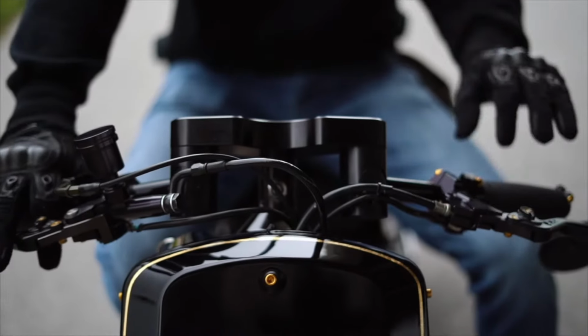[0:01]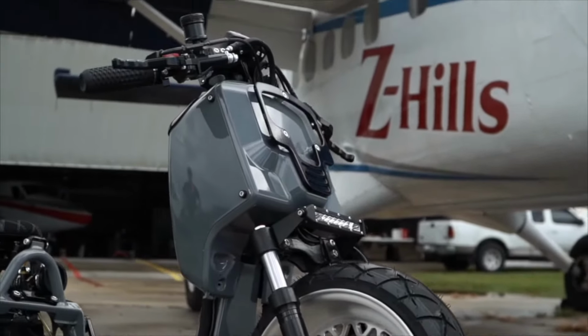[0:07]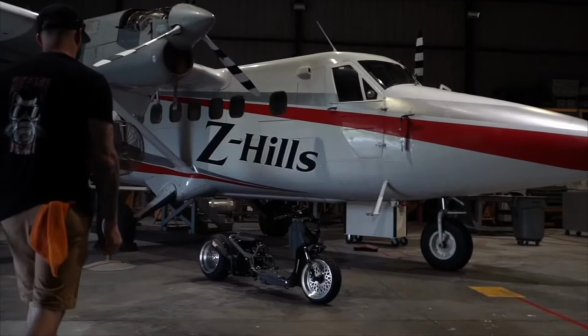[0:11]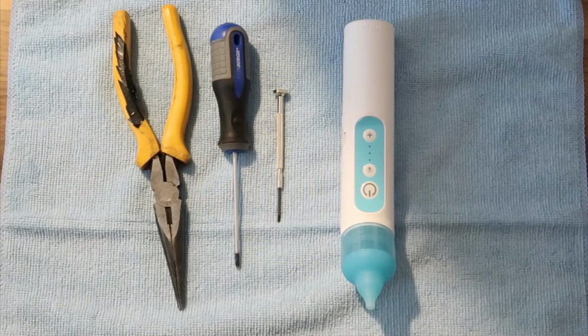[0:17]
Today's video is a little bit different. This is more for the parenting side. Those who follow the channel know I usually do bike stuff, bike builds, everything like that. My wife has convinced me to do a video on the FridaBaby nose sucker.
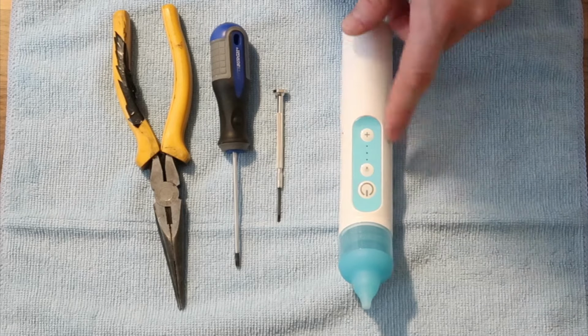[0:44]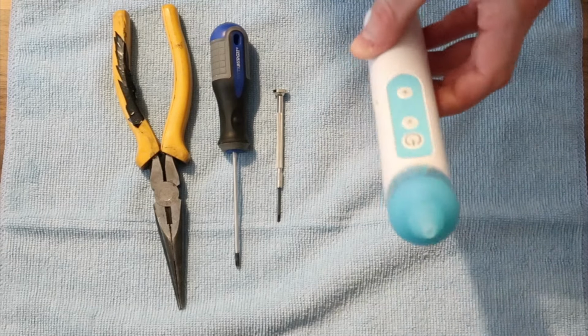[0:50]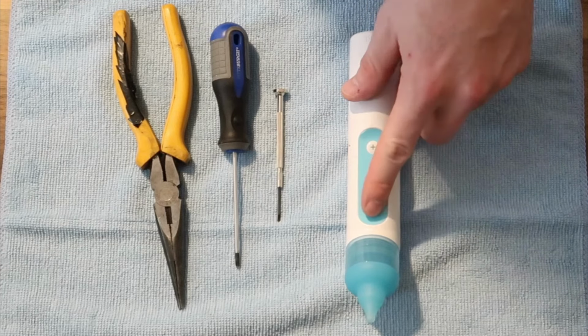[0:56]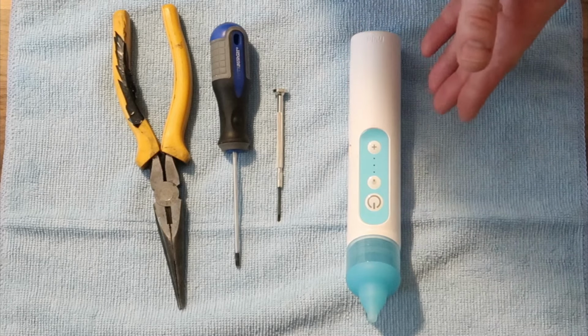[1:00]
Of course, as a lot of you know, we just had a baby and this has stopped working. We just got it about 4 months ago. It's an electric sucker just to suck the boogers out of the baby's nose. It's very popular on Amazon. What happens is when you go to turn on the power, it stops sucking and it makes like a high-pitched ringing noise. So this is how you're going to fix it.
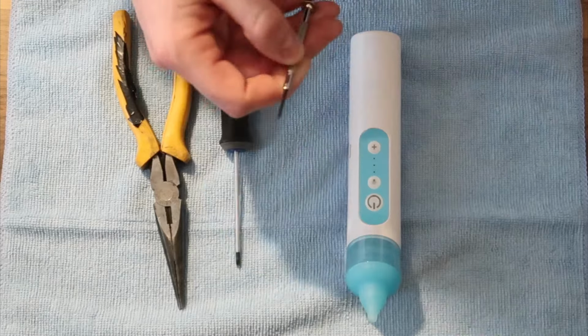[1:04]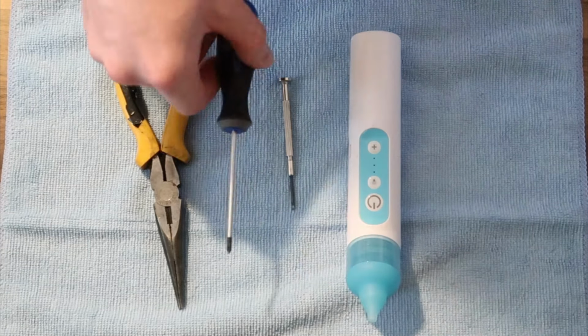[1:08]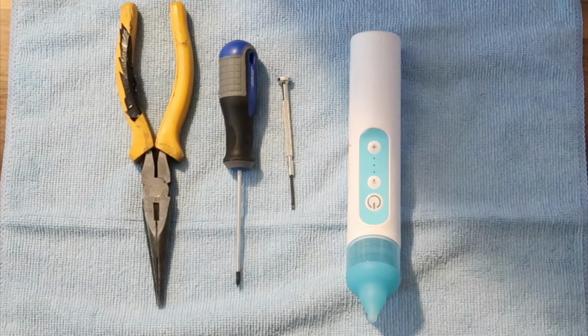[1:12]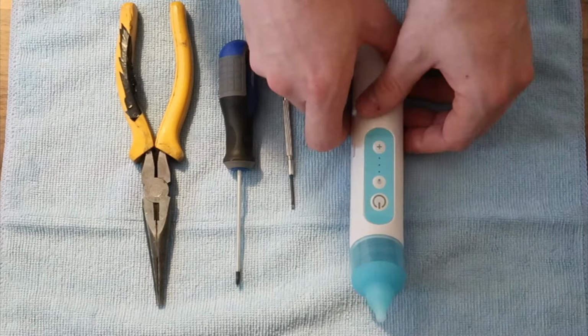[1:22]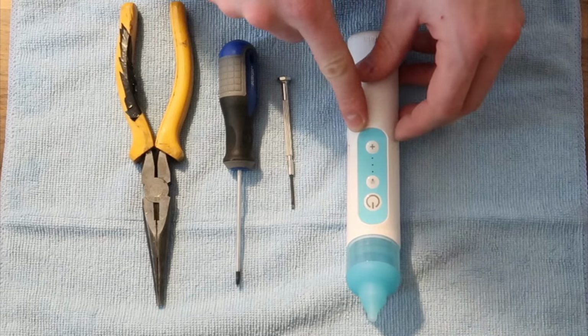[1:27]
You're going to want a small flathead, a small Phillips head, some needle nose pliers, and then possibly a lubricant, like PB Blaster, anything along those lines. And I'll show you how to fix that issue instead of buying a new one or trying to reach out to Frida themselves.
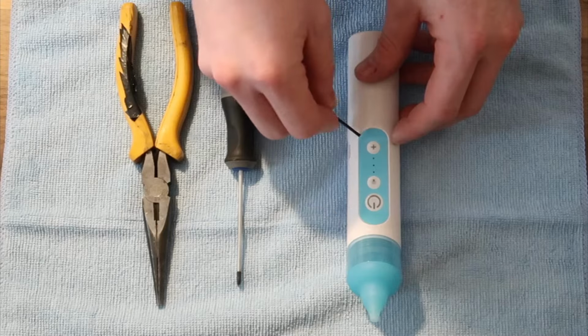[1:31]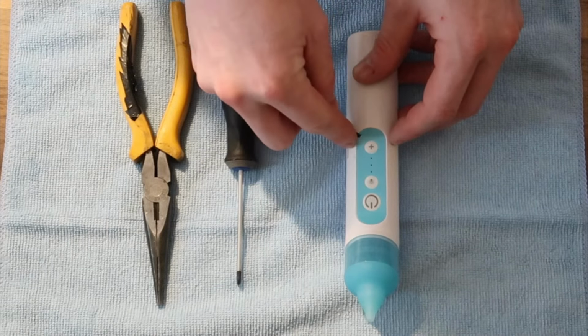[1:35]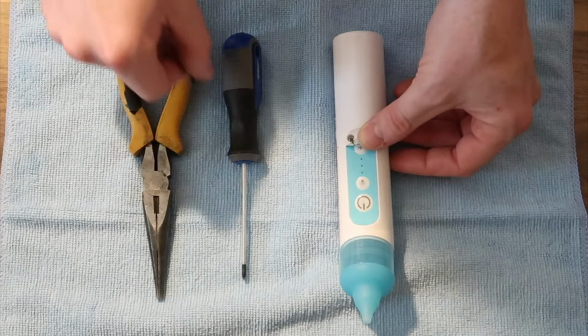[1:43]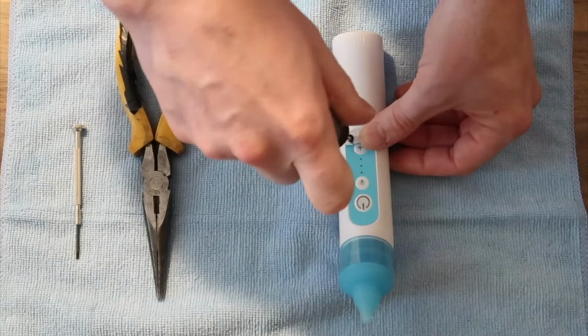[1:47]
First thing you're going to do is on the bottom right hand side here, you can take your small Phillips head and peel up the sticker. It's kind of like a thick plastic sticker, but what that's going to do is reveal a little spot for a Phillips head. And that's when this comes into play. So you're going to go ahead and loosen that up.
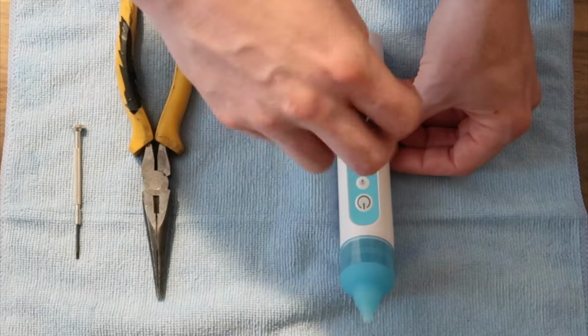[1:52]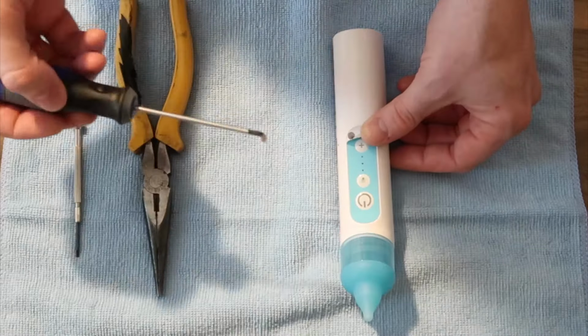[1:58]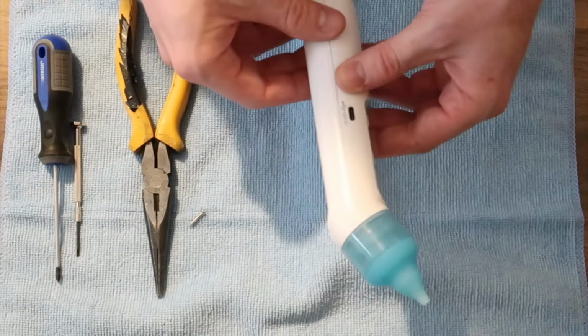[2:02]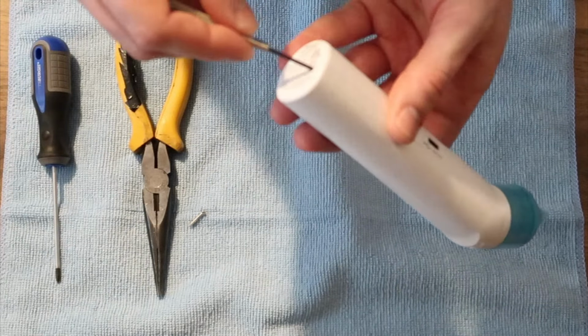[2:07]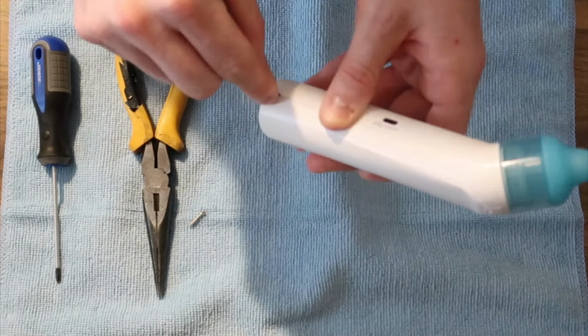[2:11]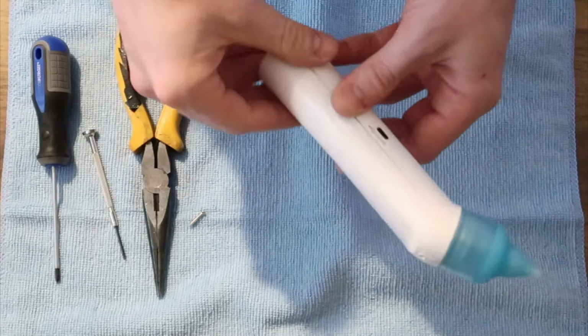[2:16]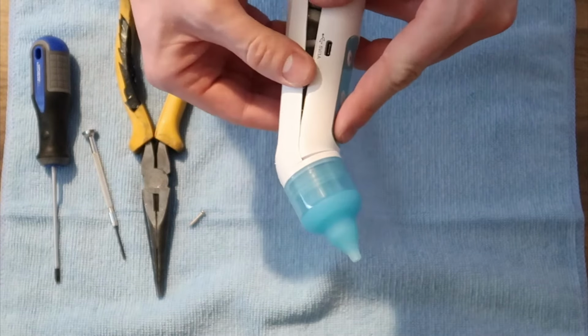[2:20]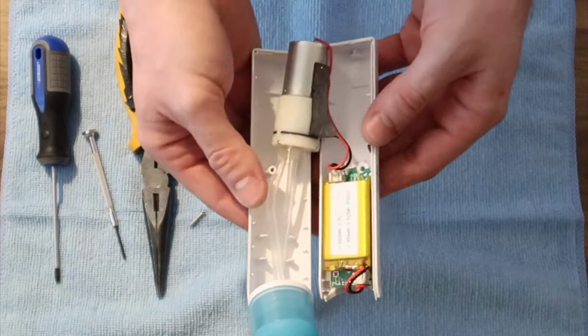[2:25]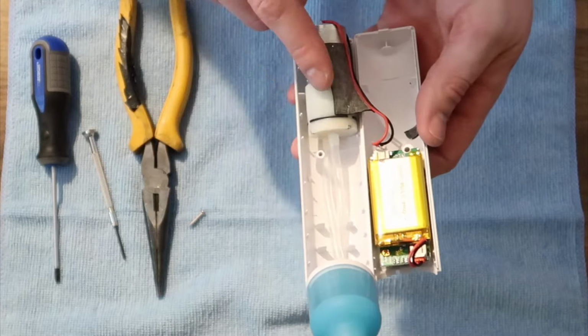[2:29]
So now that the screw's out, you can now disassemble the unit. Now, what I did is I used the small flathead. I pried it from the side here, just to get it open like that, and then this top portion will slide down. There you go. So now this is what you're going to see. You'll have the battery, the motor, and then the two suction tubes.
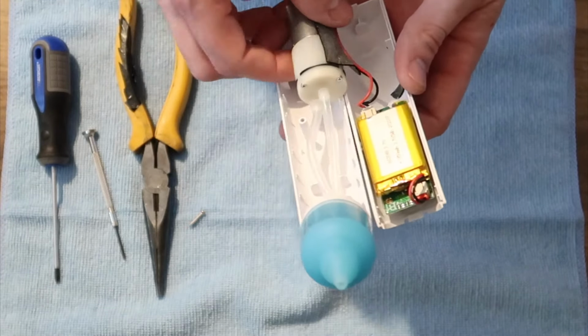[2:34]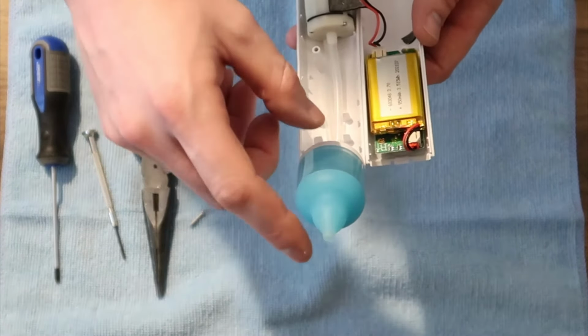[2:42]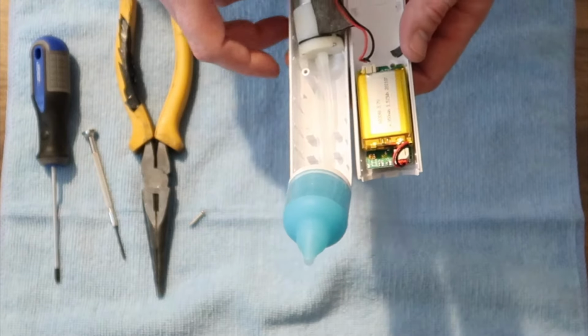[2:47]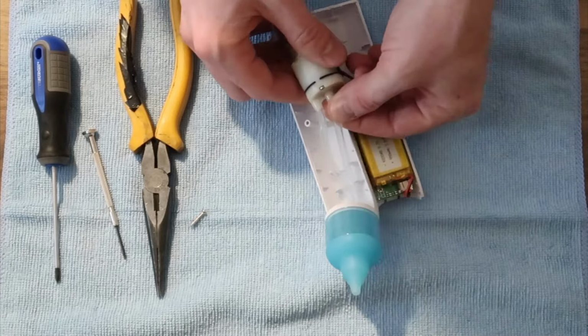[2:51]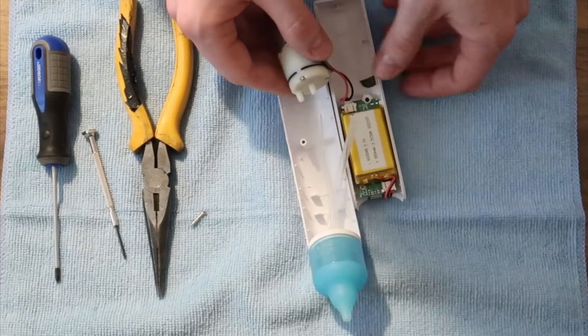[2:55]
Now the suction tubes, they cross over. You can kind of see like that. I'll go over at the end to make sure that you have it done the right way. So you should be able to feel the sucking, otherwise it would be reverse and blowing out air. So in that case, you just have to flip the two tubes. So what you're going to do is first remove the two tubes, like so.
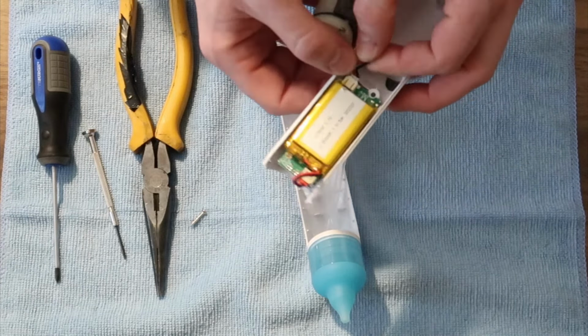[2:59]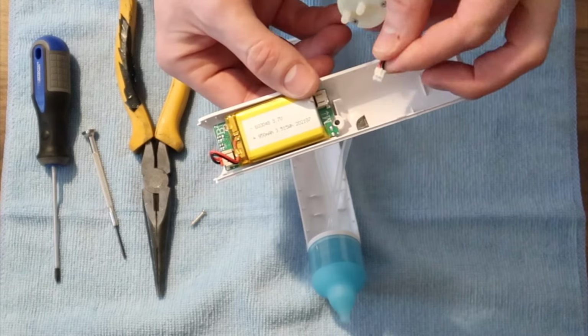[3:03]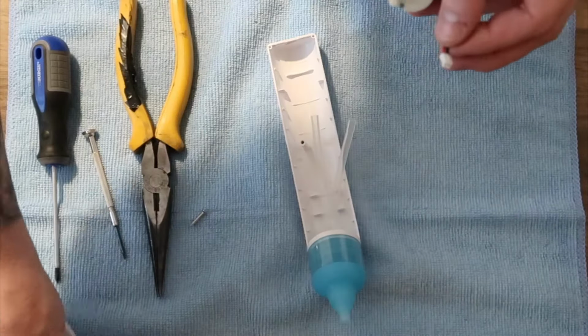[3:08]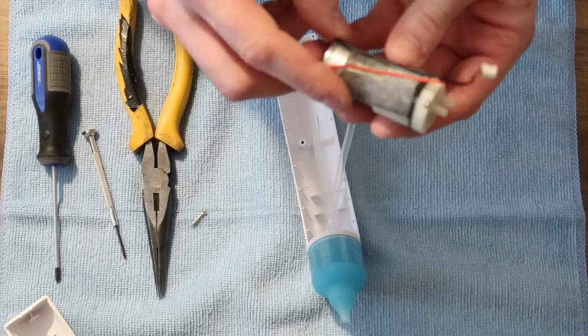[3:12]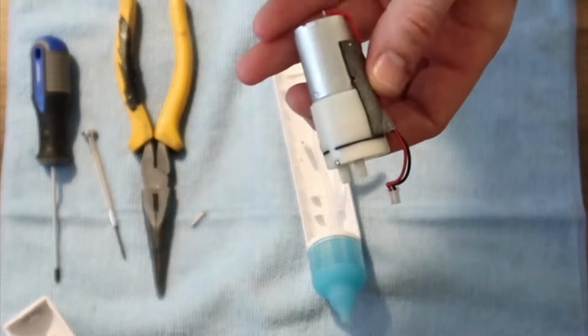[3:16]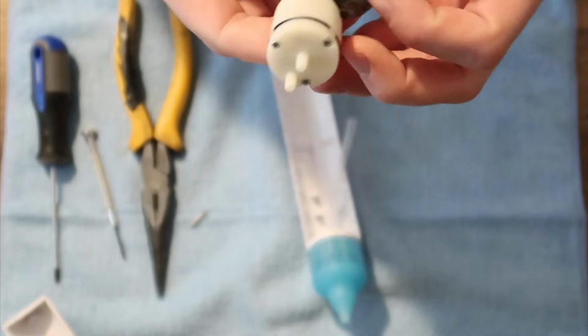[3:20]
And then you're going to want to remove the unit from the battery. So you're just going to pull the little plug out. It's just a little snap-in plug. This you can now put to the side. You're going to have some double-sided tape here on the battery itself. Let me get a better view. And what you're going to do is just peel that back.
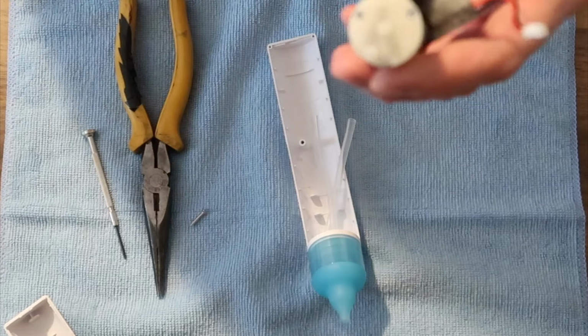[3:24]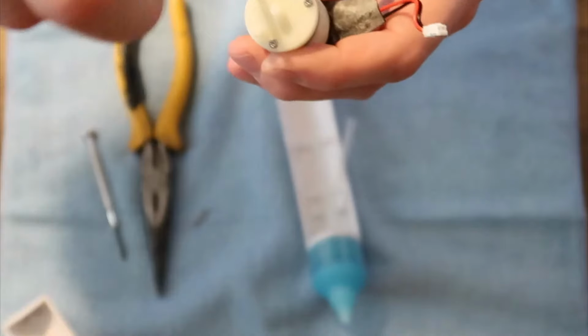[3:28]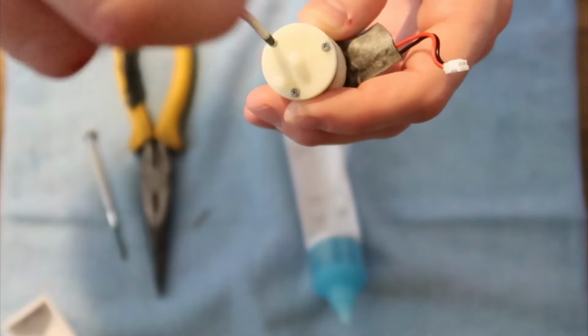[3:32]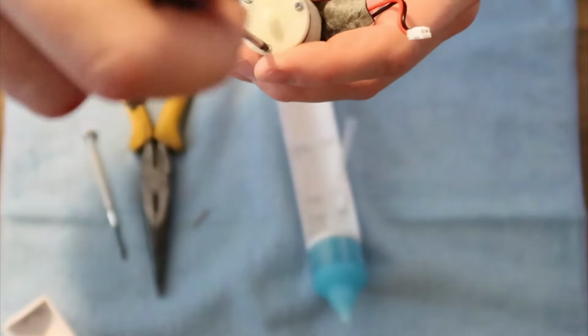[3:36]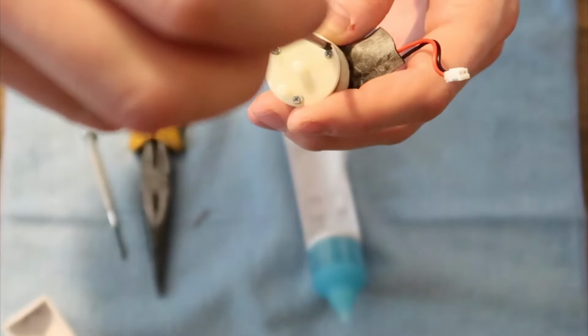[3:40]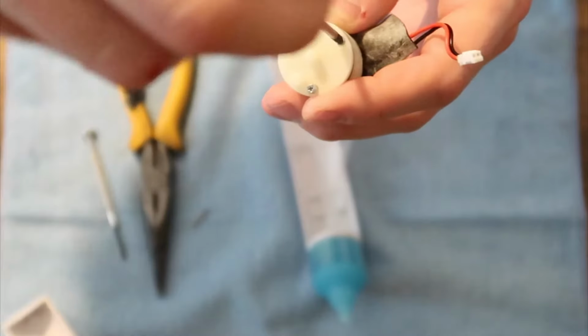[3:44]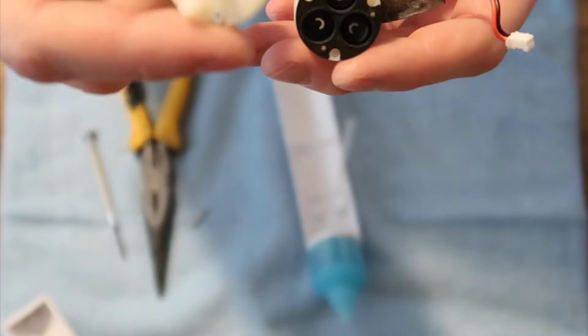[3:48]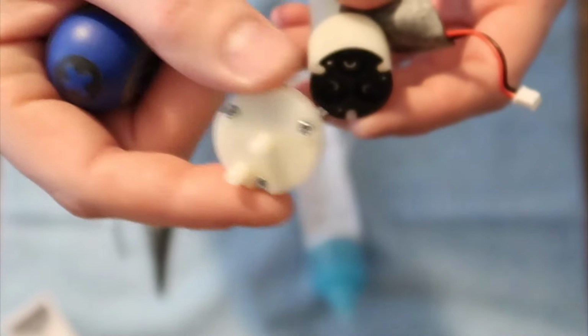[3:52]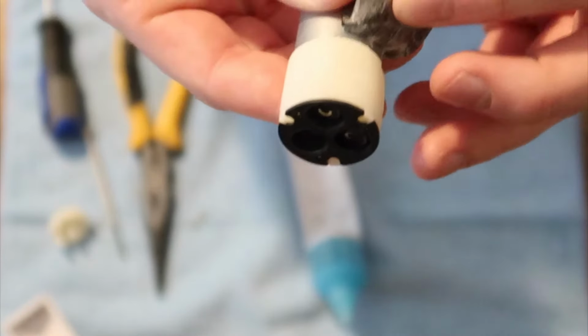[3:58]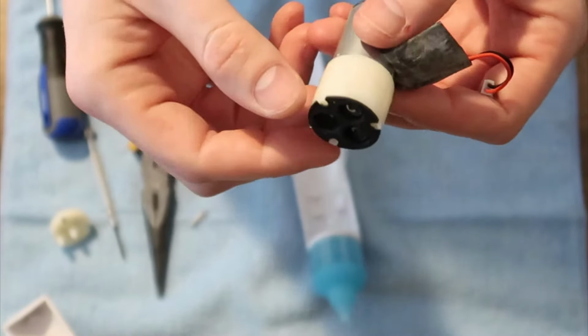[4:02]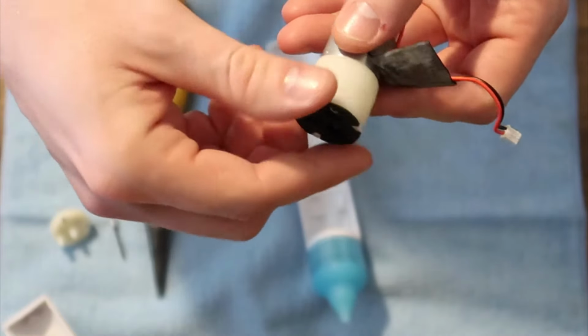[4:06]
You have 3 Phillips heads on top. You're going to go ahead and remove those. Now that these are all loose, you're going to slip off this cap, and you can go ahead and put this to the side. Next, if you haven't already, peel this down, and then there's actually 2 layers to this white portion here. So there's a top half and a lower half.
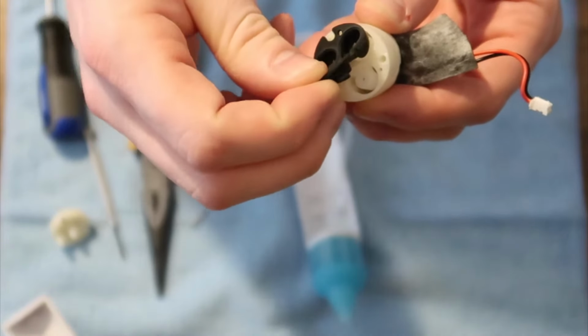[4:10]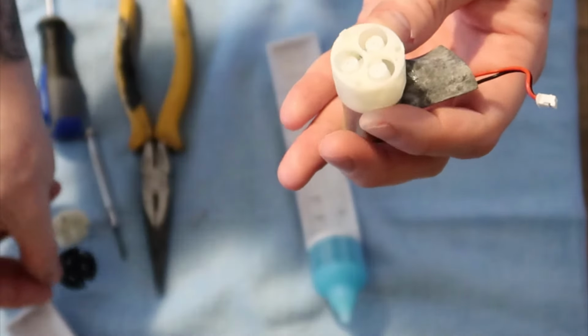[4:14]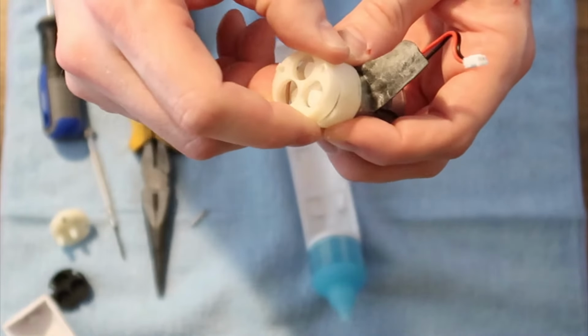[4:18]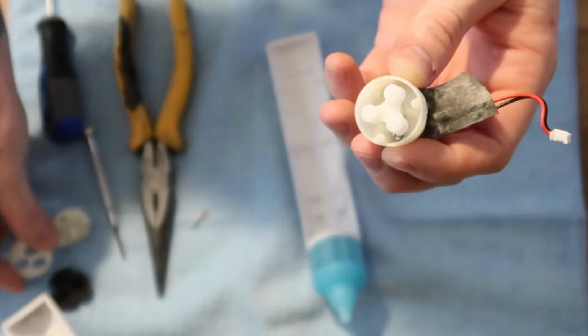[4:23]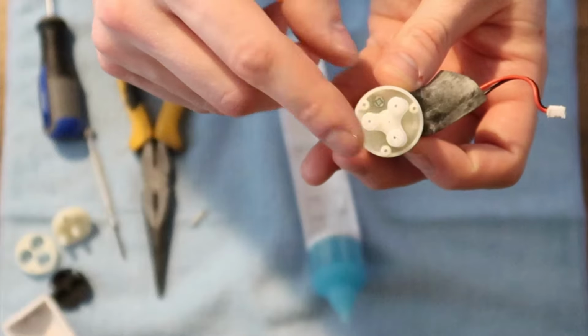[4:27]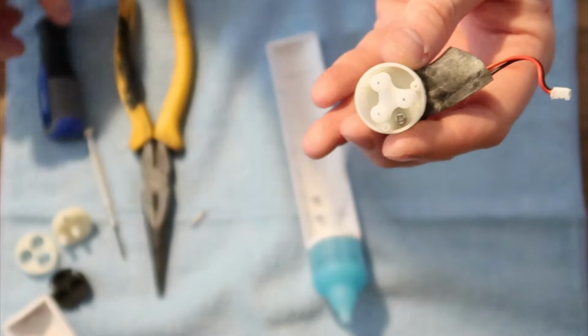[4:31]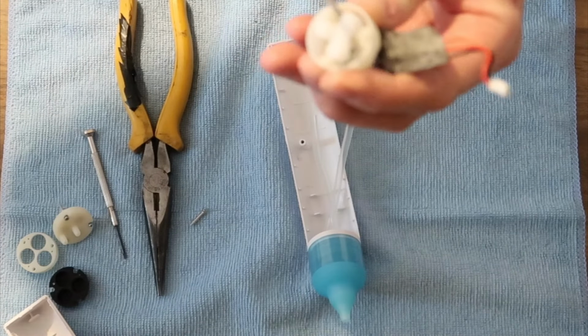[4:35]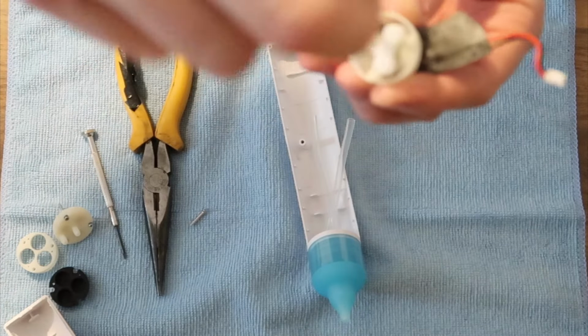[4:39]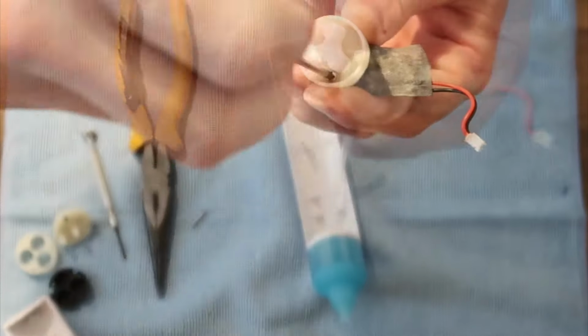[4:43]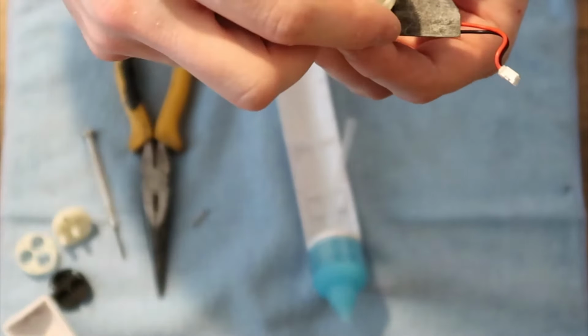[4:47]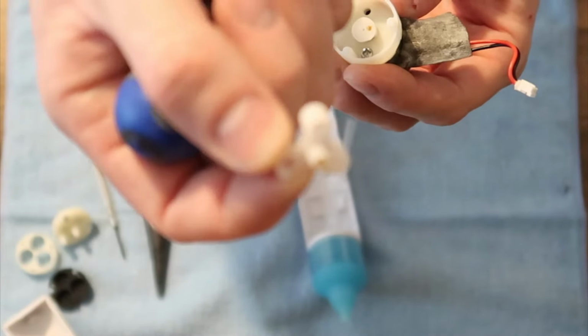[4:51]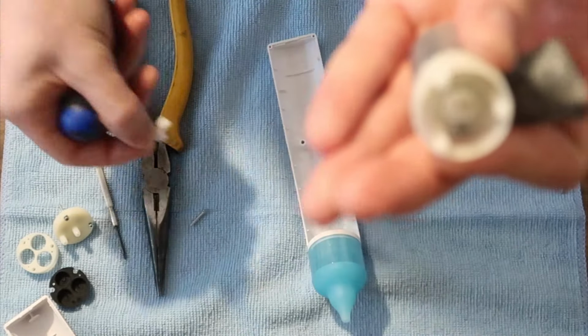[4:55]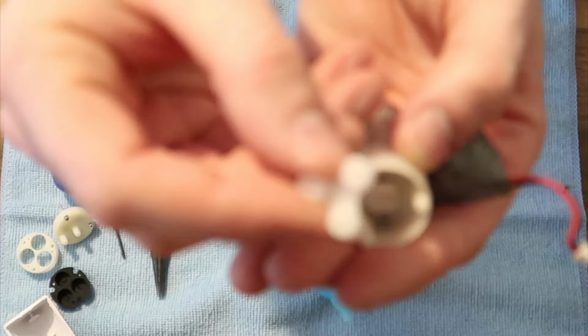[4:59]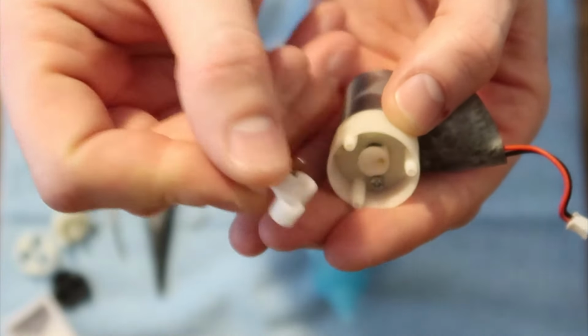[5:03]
So what I'm going to do is peel this rubber gasket off here. And then it just slides right off with this panel. In here you're going to have 2 Phillips head screws. You see one right there and one right there. So you can just go ahead and move side to side. There's 2. So you can slide this portion off here. Get a better idea. So you can go ahead and pop this off like so.
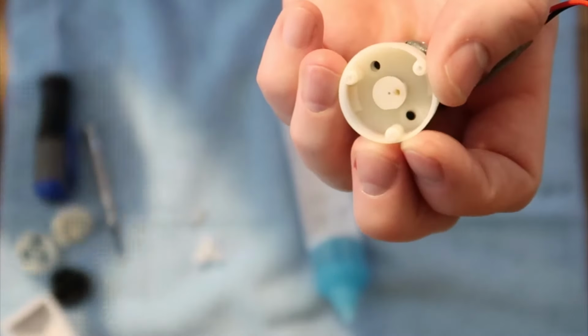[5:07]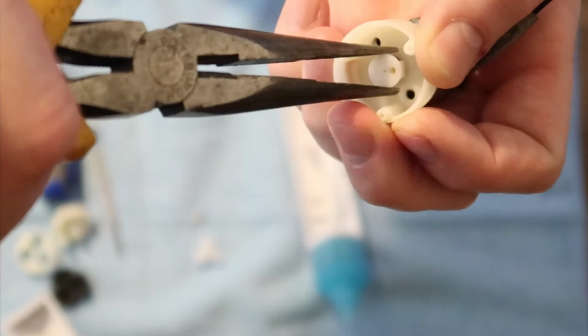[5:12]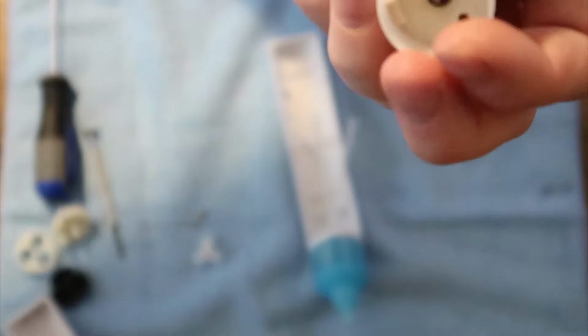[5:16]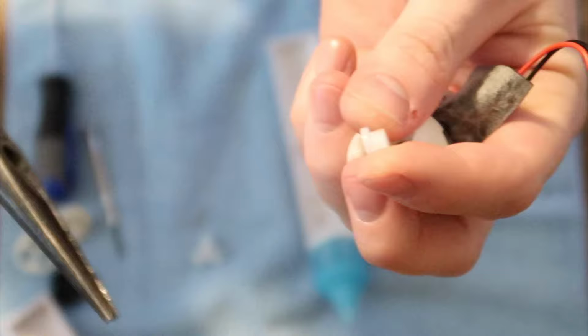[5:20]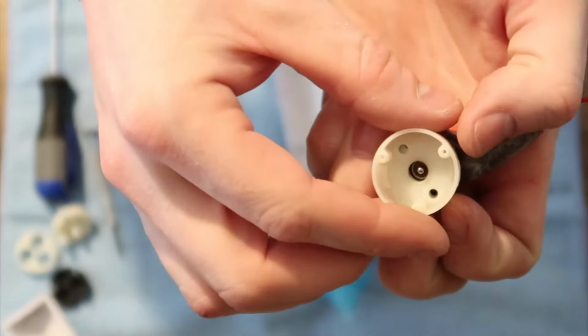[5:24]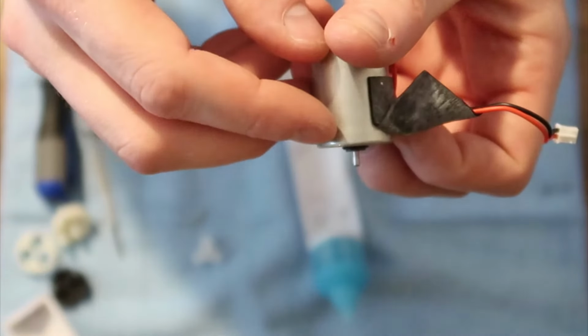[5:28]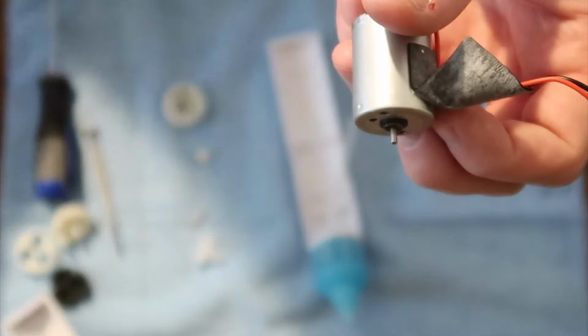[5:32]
So once you get those 2 screws out, you can just use your needle nose pliers, get a hold of it like so, and just pop this off. So now you can remove this cap, and now you have your motor exposed. So chances are, with this motor, it's seized up. So this is what you really need the needle nose pliers for.
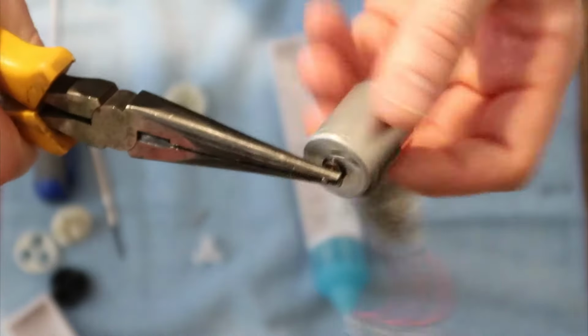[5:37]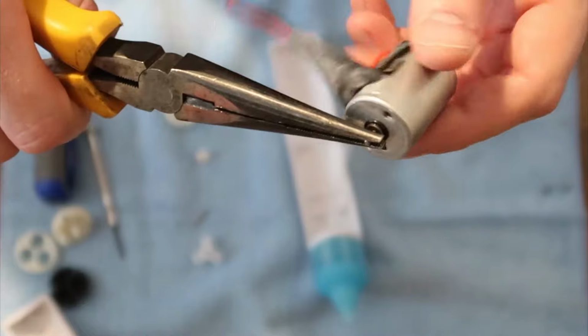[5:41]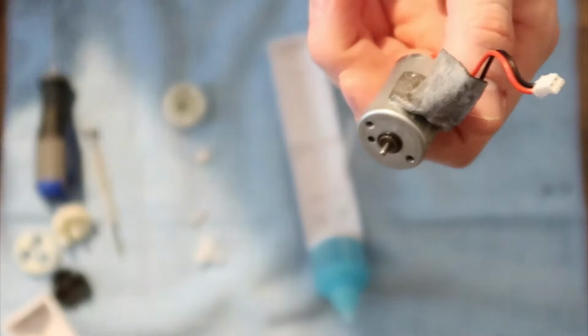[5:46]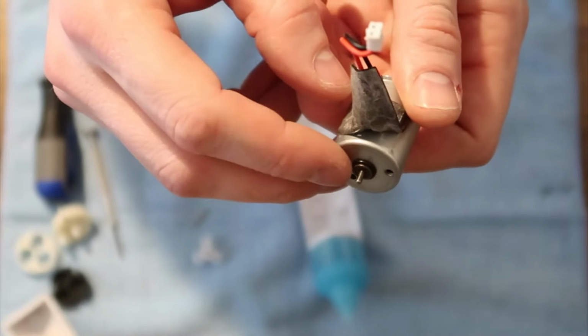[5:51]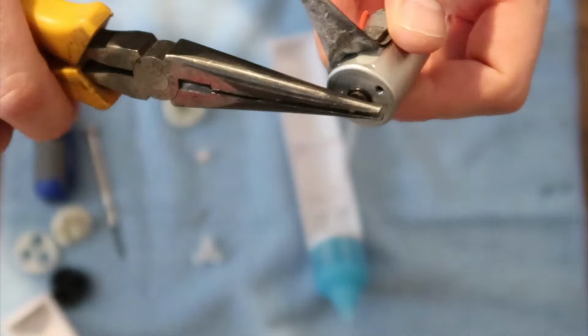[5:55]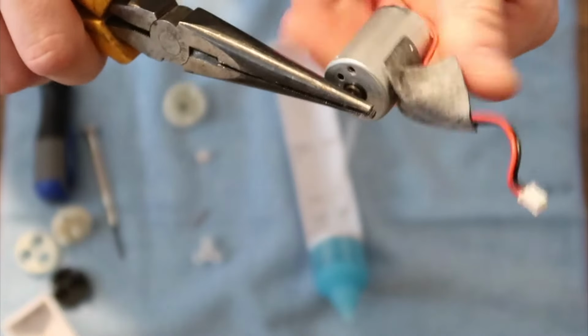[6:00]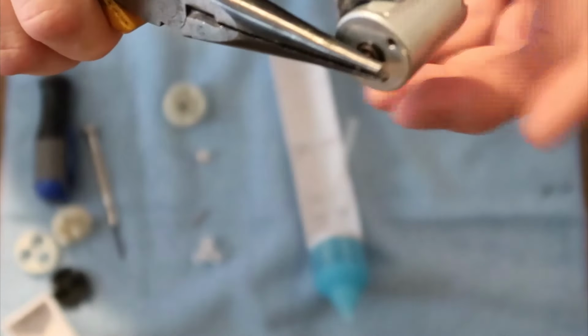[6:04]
You can go ahead and clamp them on and start spinning it. Chances are it's not spinning freely, it's pretty tight. So what you're going to do is keep spinning it, and then spray it with some PB Blaster, or if you have some lubricating oil, something over on the motor head here. And then again, put the needle nose pliers on, keep spinning until it spins freely. Once it starts spinning freely and you'll feel that there's no tension on it, I mean, you see how this one is now? It didn't used to be like that until I fixed it.
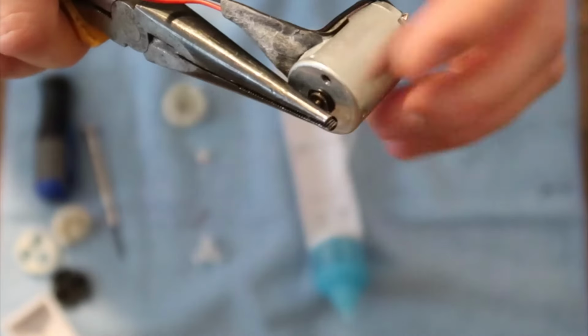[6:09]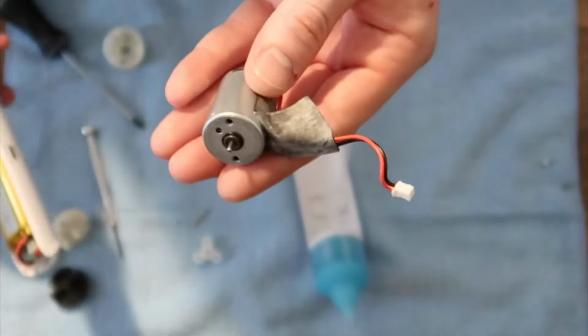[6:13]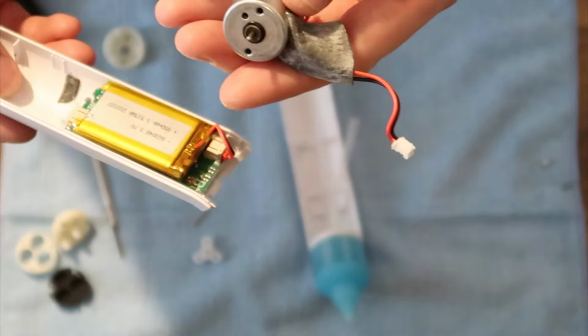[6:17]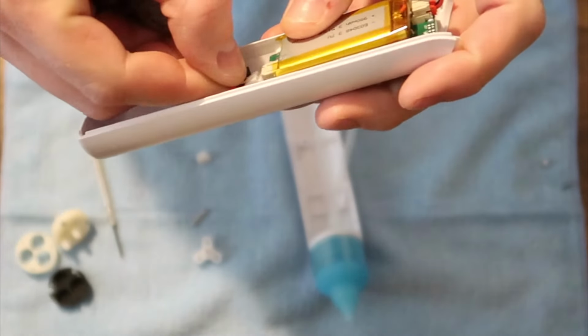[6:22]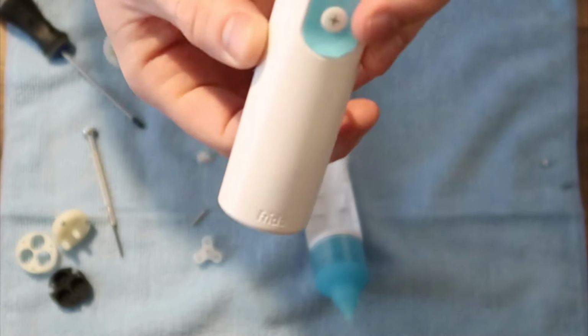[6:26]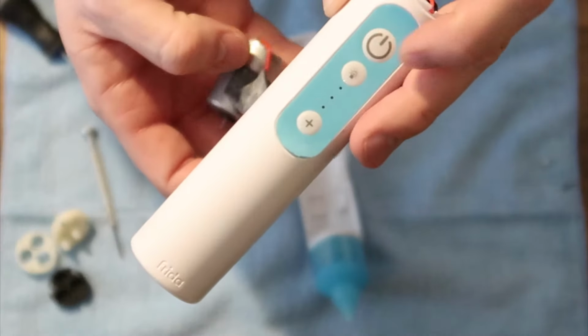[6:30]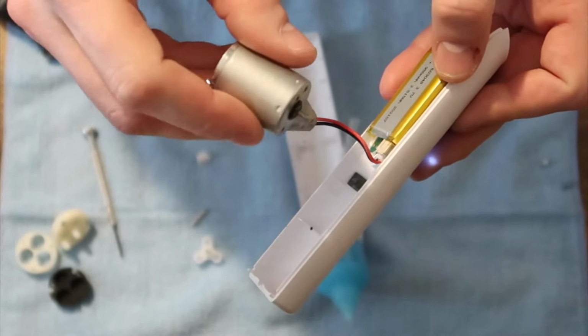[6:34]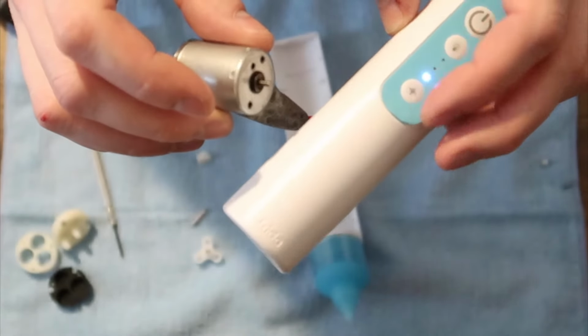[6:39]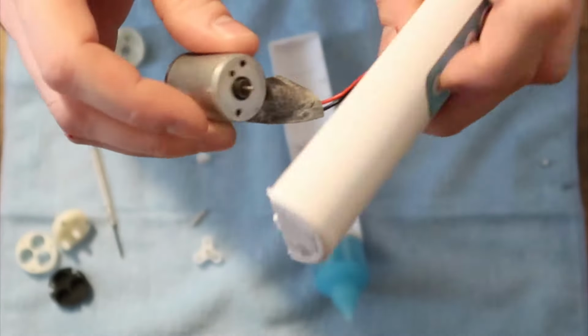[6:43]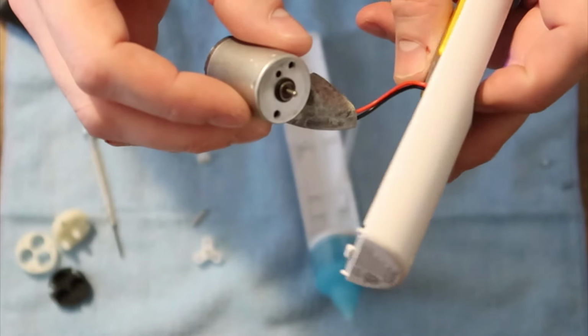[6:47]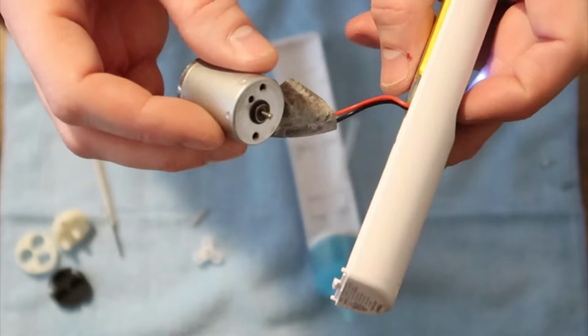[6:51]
That's how you want it to go. So to make sure that the motor is working now, what you can go ahead and do is, while it's off, while the unit's all disassembled, plug this back in to the board, like so. You're going to hit the power button, and you'll physically feel the motor humming, and then it'll be spinning, and then you can go through the plus setting on this to give it more suction or more power to the motor itself. And I can feel it, I can see it, so this is good. Fixed the problem.
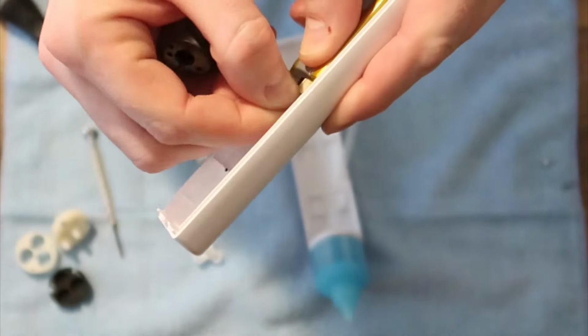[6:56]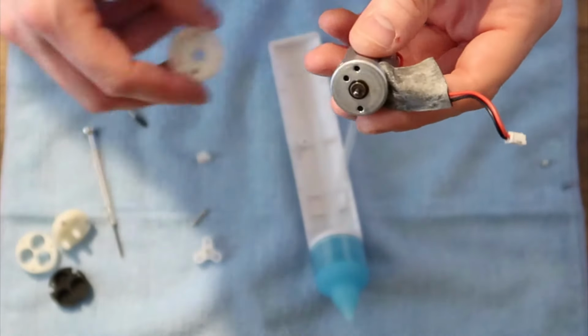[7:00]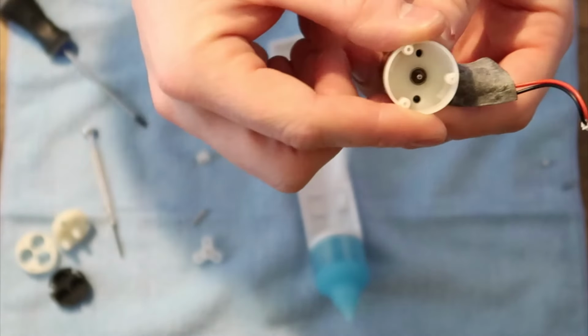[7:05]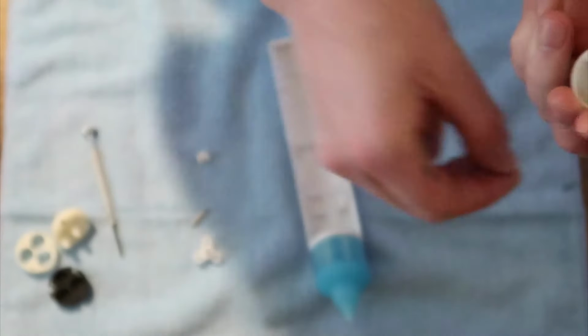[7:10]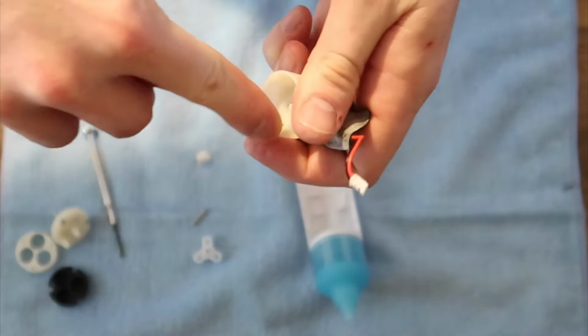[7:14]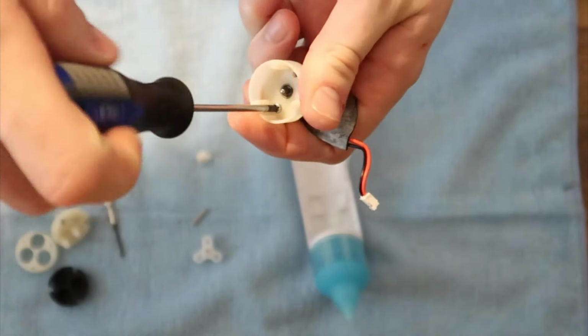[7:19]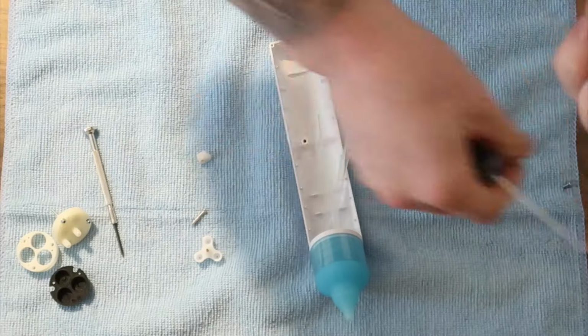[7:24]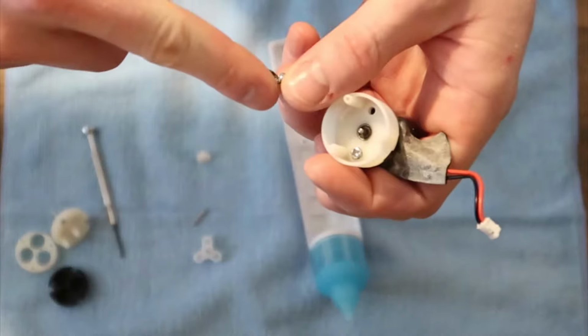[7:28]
So you can turn it off. Go ahead and unplug it, and now the reassembly is going to go the same way. You're going to put this lid on, and once it's on, it kind of locks in place. And then the two smaller Phillips head screws. I apologize for the autofocus. It does not seem to be catching at all for this video.
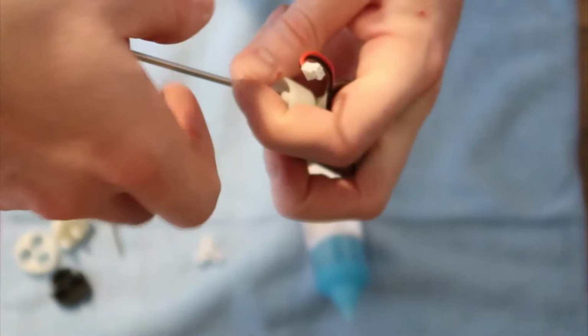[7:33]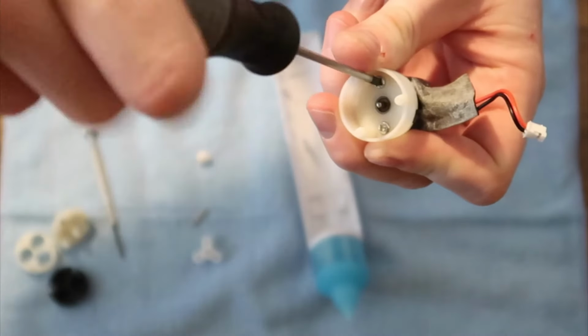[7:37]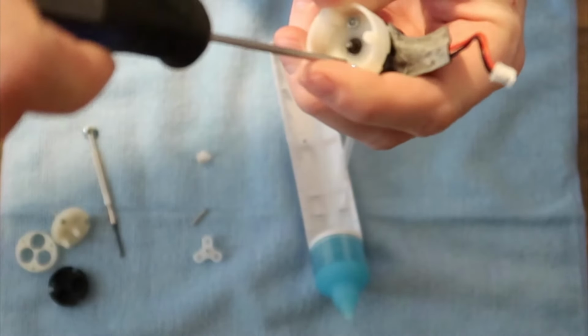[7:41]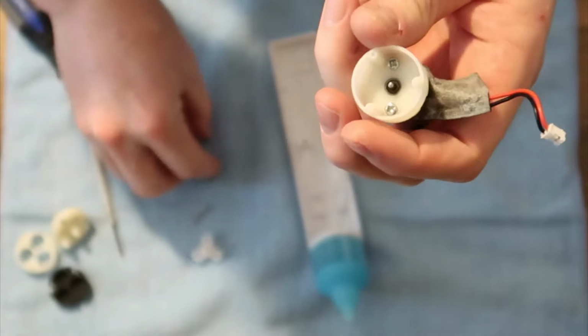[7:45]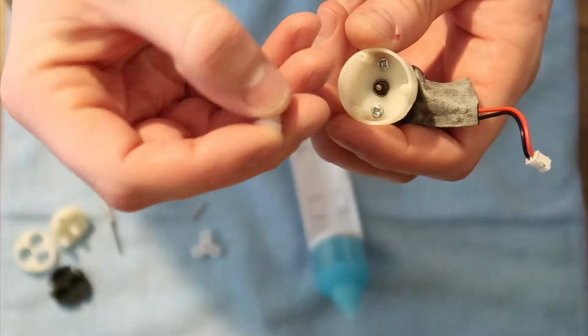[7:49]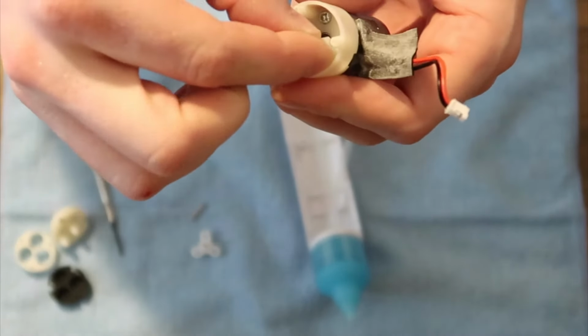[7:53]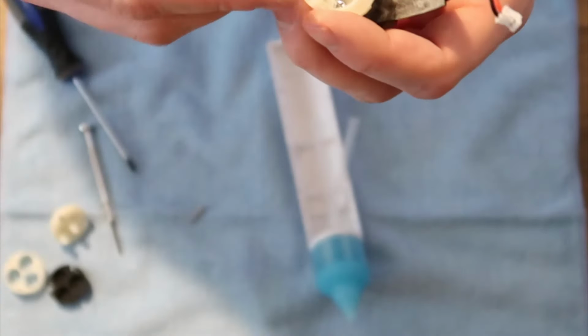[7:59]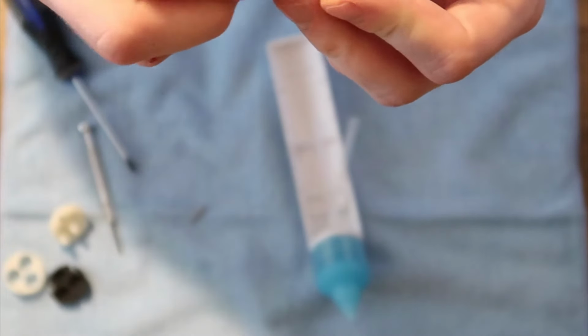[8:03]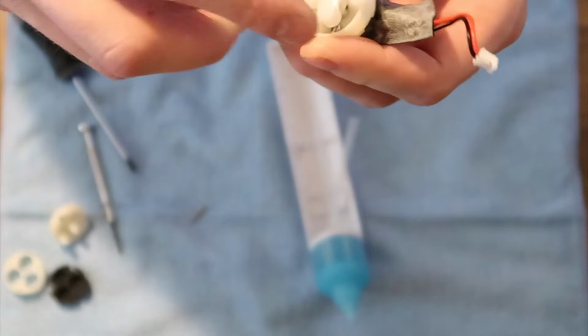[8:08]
Once you get that on good and tight, you can go ahead and take this piece. You're going to want the flat surface facing up. So there's a larger hole on the bottom, and that's what you're going to slide onto the motor, and you'll just push it down nice and snug. After that, we're going to go ahead and put the smaller triangle piece on, and it's going to slide in that hole.
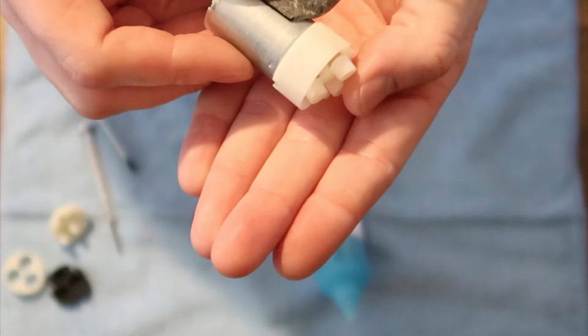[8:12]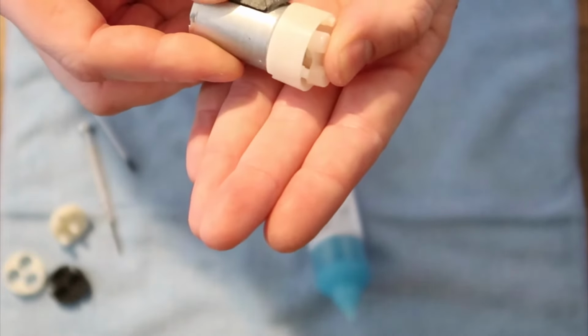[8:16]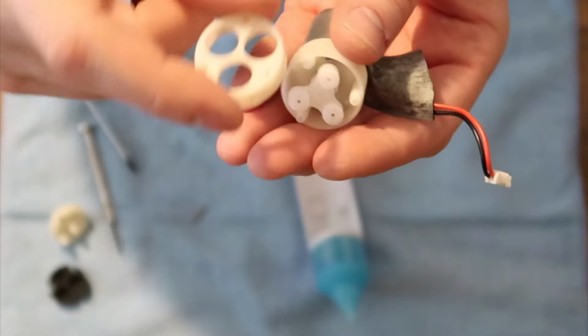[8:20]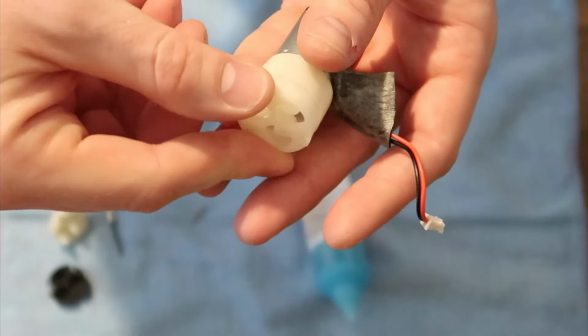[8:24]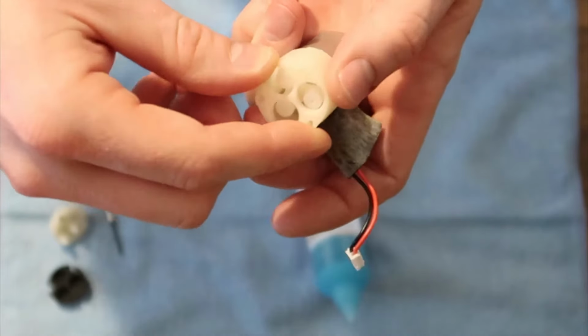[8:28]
Now you're going to see it's at like a weird pitch or angle. That's normal, so don't worry about that. Just press it in so it's nice and secure. Again, after that, you're going to go ahead and slide on this lid. It can only go on one way because the holes line up over where you put the screws in. So that slides in secure.
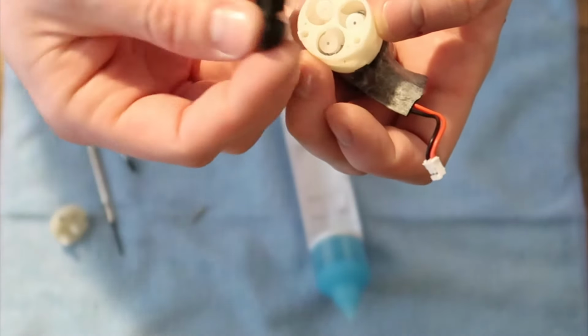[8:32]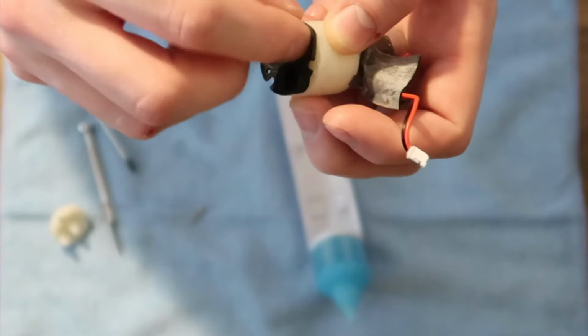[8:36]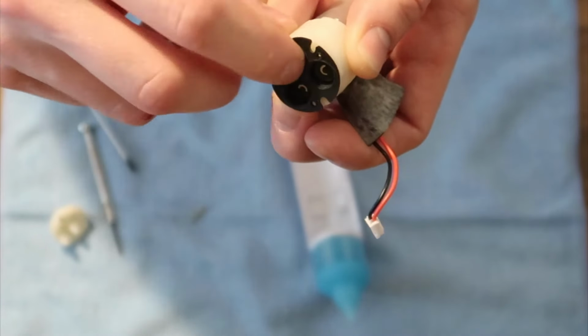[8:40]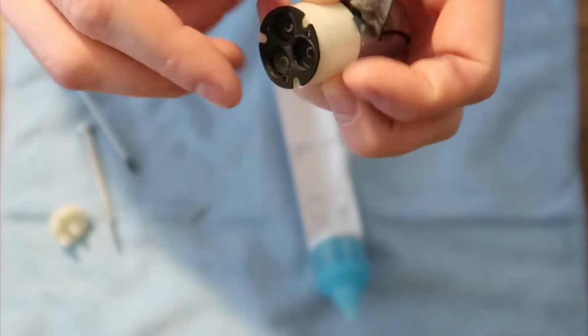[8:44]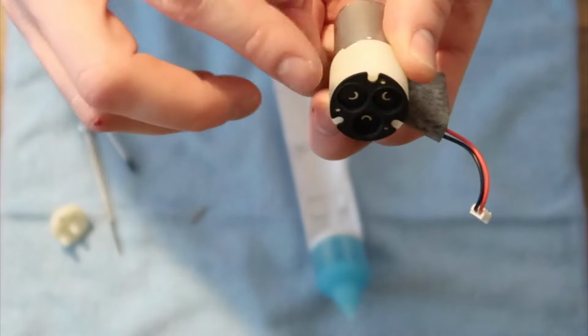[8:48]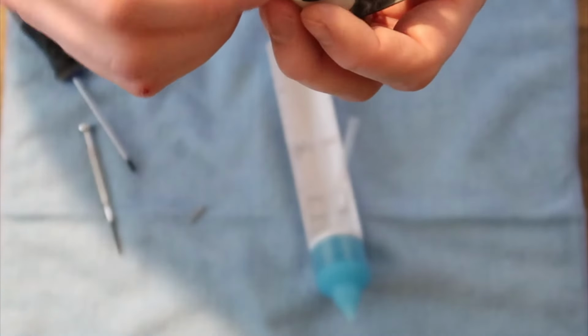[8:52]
I'm going to go ahead and put on the rubber suction. Now with this, you're going to have to kind of massage it into place because it has to get over that little cylinder piece that we just slid in there. So you're going to want to rub it back and forth like this. Massage it into place till it makes a nice flush seal all around. And then after that, we will put this in.
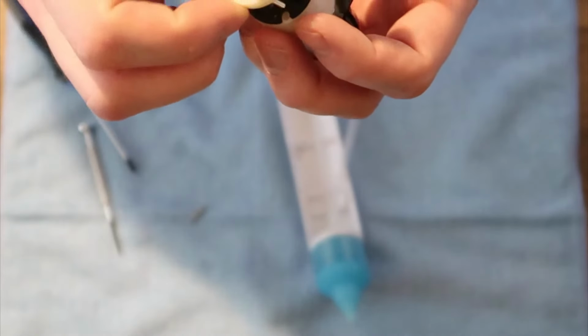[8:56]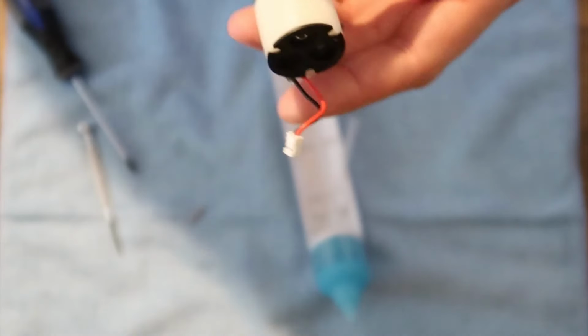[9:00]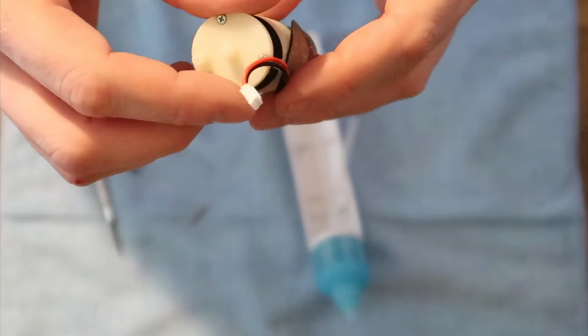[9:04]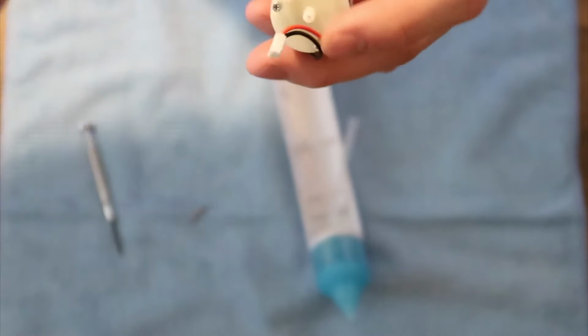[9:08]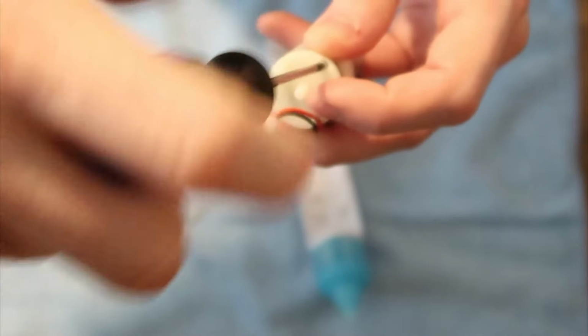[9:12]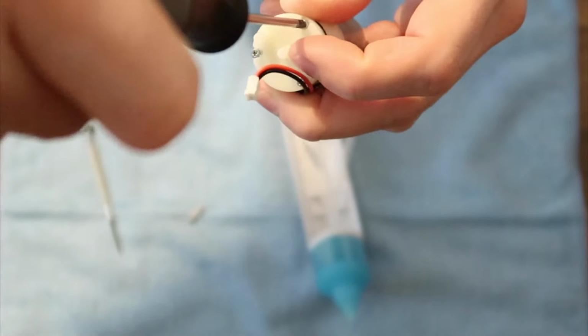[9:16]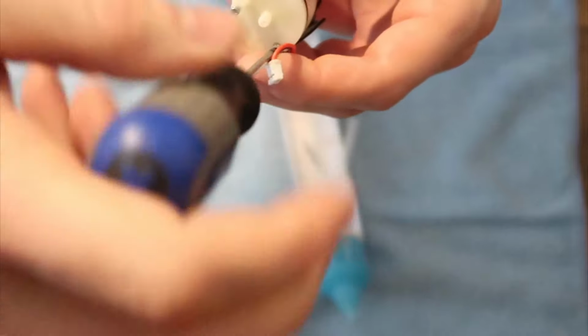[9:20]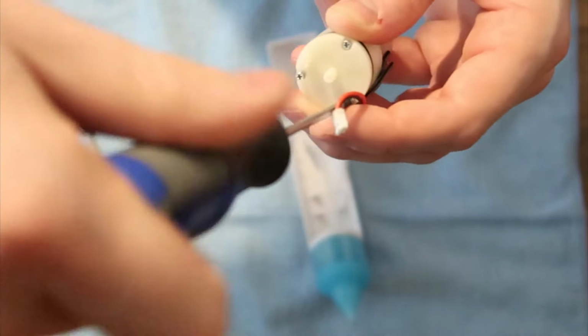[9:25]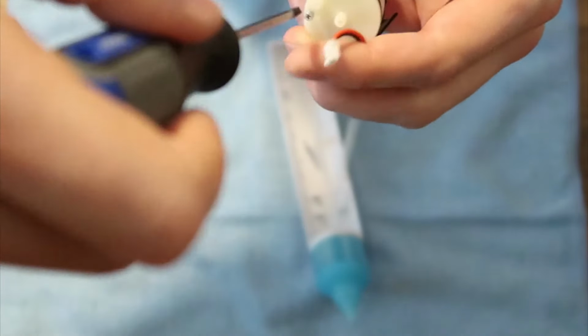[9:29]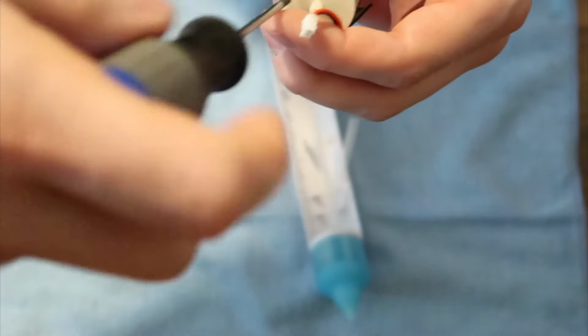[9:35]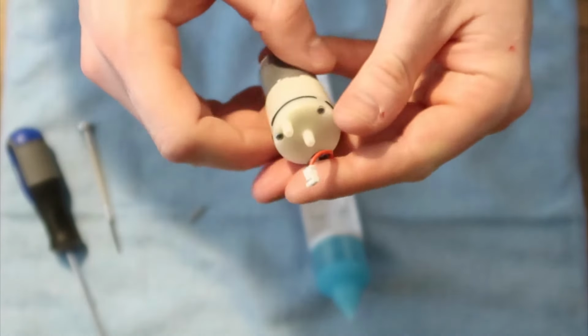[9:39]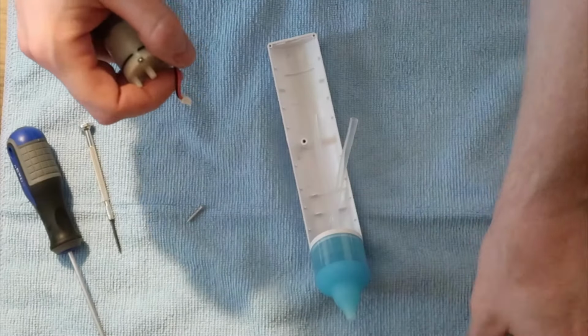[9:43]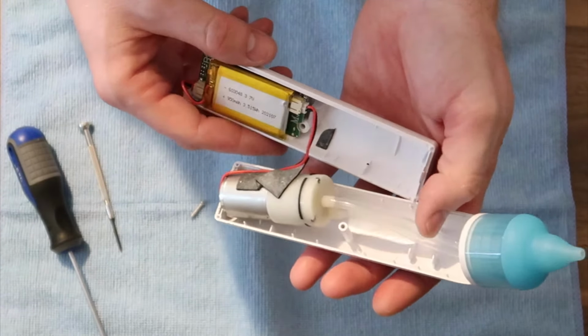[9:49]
So the best way to do this is knowing that the sticky tape faces inward. You want these hoses to face out. So it's going to go like this. Now what we'll do is we'll plug it back in again, hook the hoses up, and just make sure that we have it functioning the correct way. Okay, so once you have it plugged in and the hoses are hooked up, you can hit the power button.
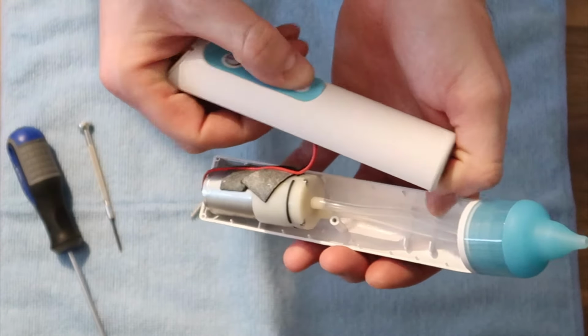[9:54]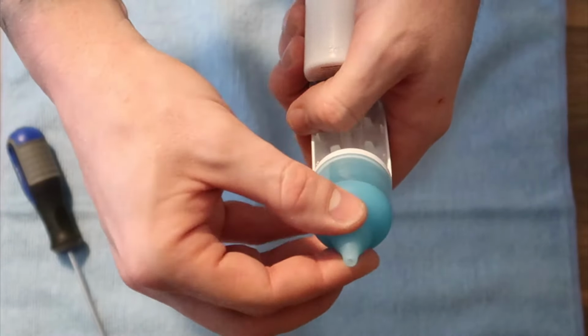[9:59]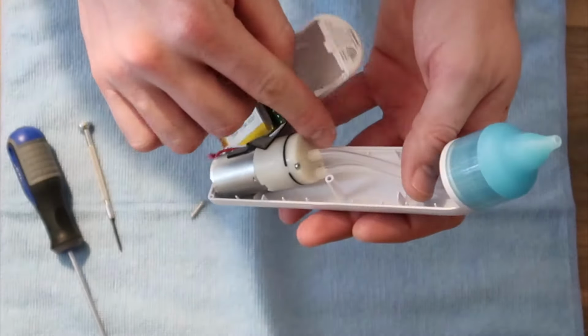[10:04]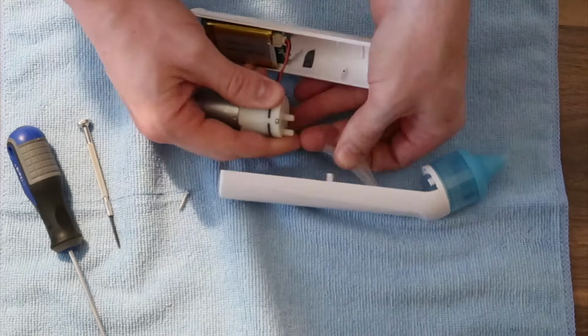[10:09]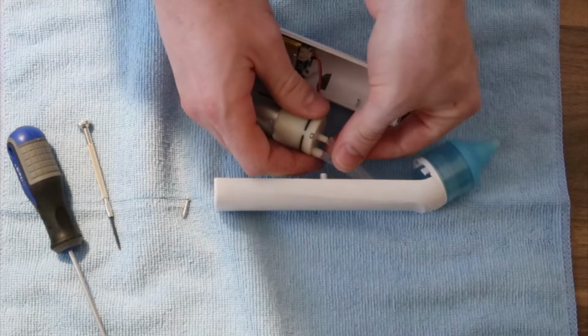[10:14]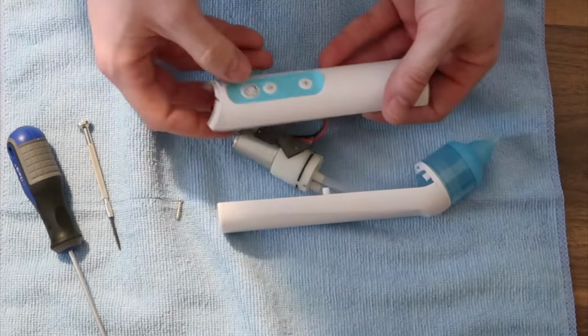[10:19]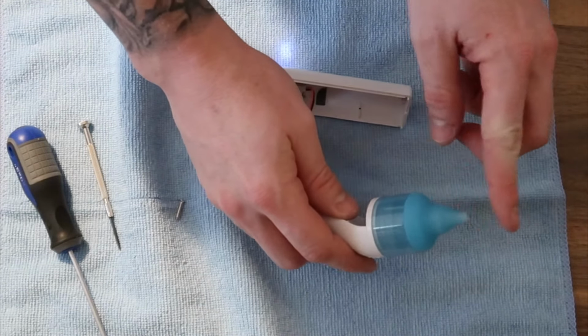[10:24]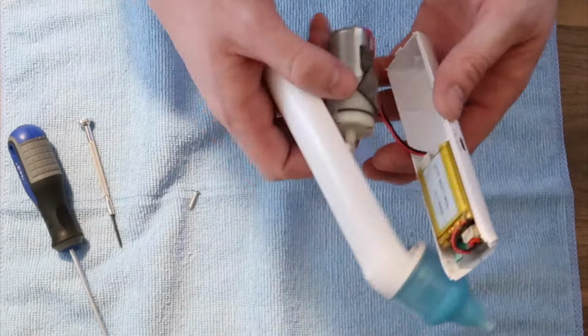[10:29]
I turn the suction up. So it's reversed on this one because it's blowing the air out, so I know I just got to flip these at the bottom. So now with that flipped, I'll hit the power button. And it is working again. Go ahead and turn the power off.
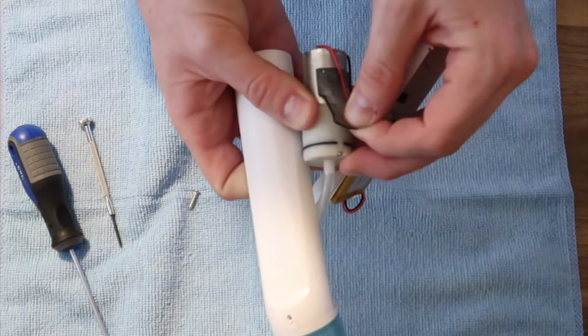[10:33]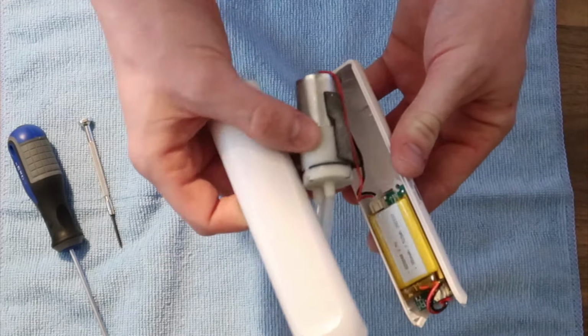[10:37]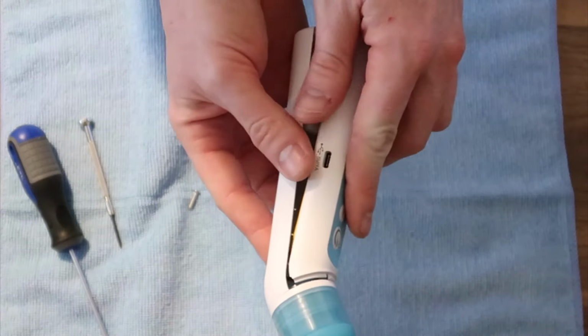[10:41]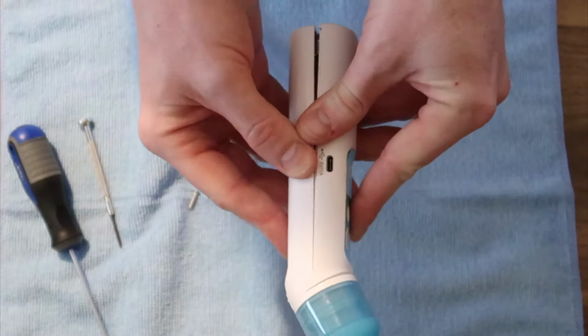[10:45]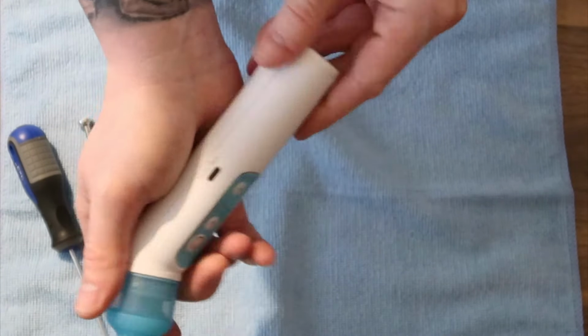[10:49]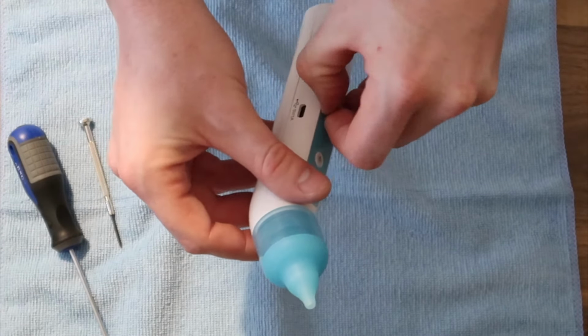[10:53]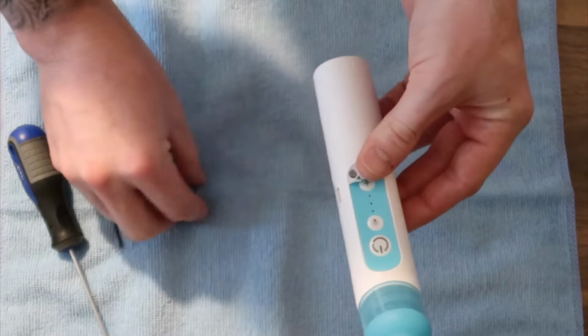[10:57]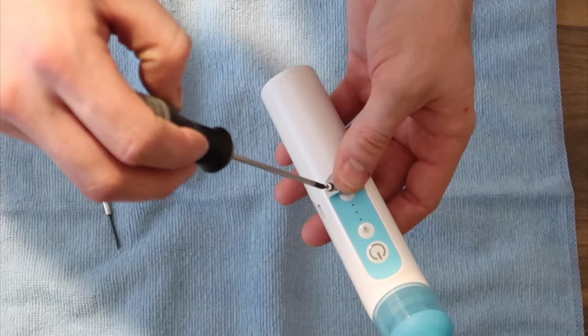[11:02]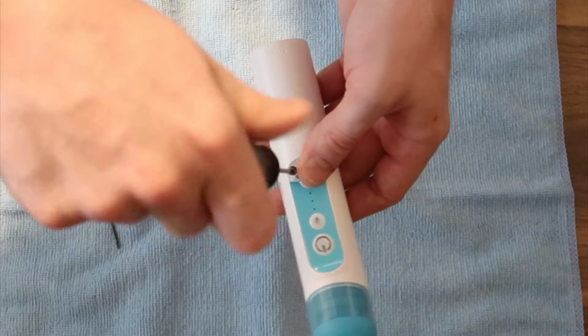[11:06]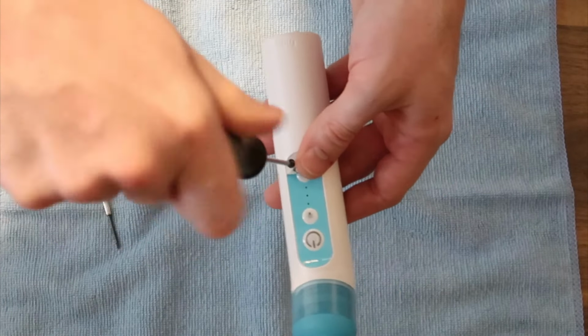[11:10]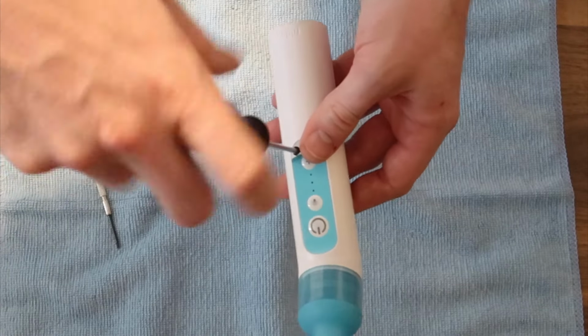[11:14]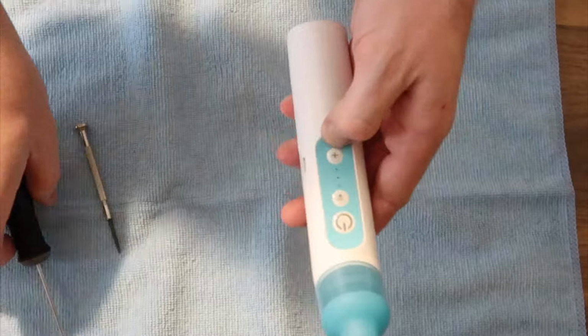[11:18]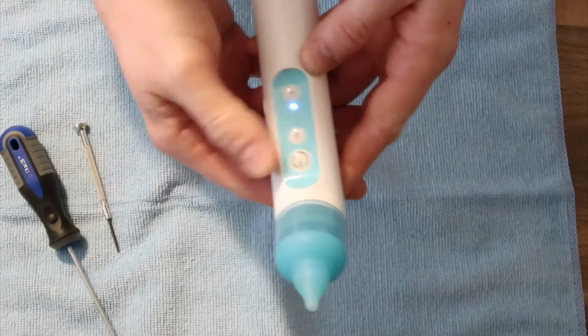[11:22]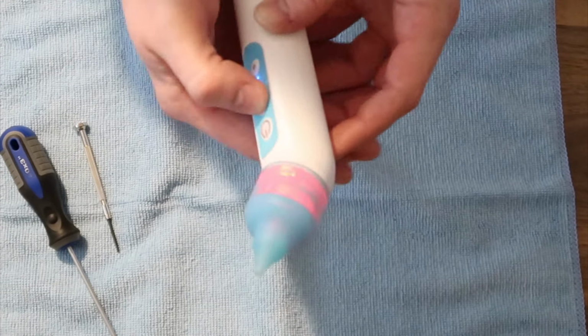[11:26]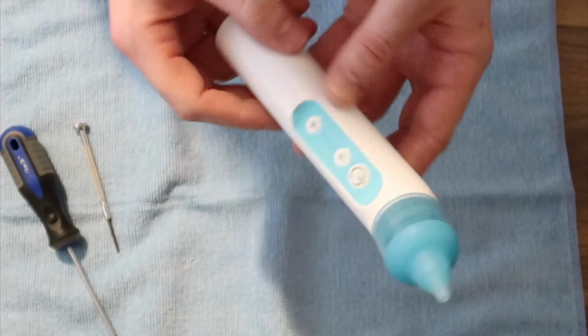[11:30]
You can take the double-sided sticky side, press it on the inside facing towards the battery. This will then slide back underneath this cap, close at the base, open up this corner, put that last Phillips head screw in, and go ahead and tighten it up. Push that right back down. And you are good to go.
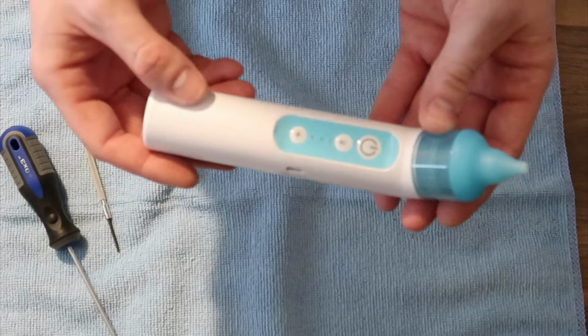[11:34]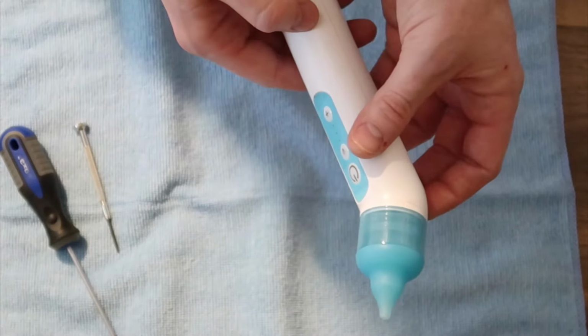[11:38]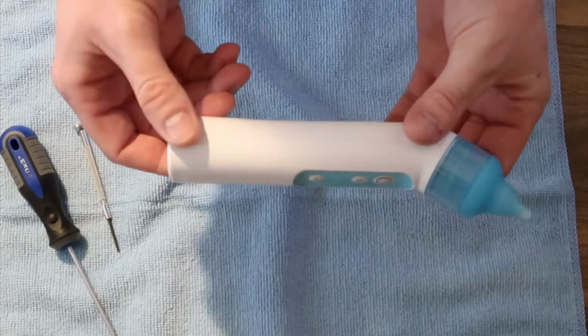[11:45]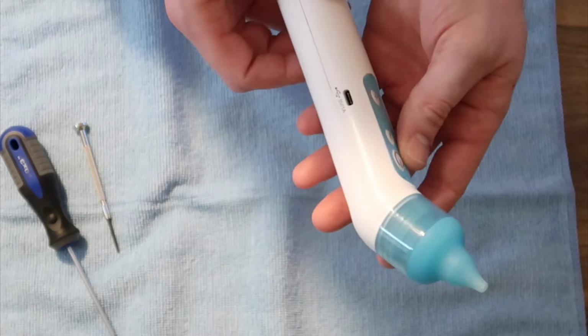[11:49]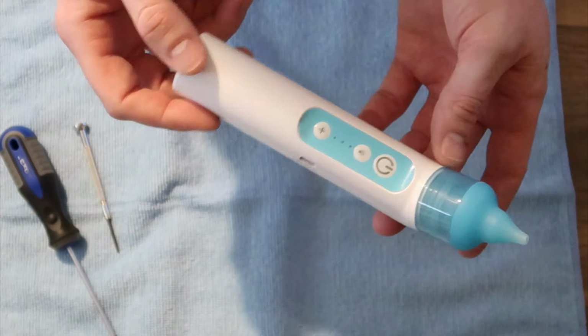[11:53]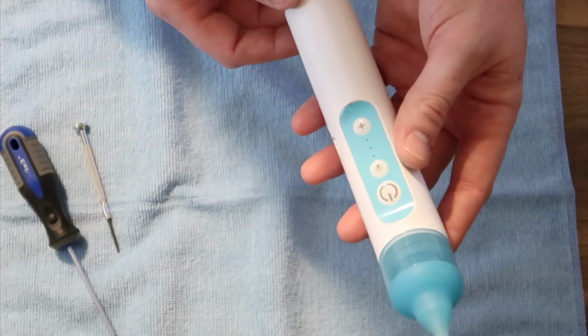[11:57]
This is a quick little fix-it video. I hope you guys enjoyed this. Hope it helps you. Hope it fixed your problem. It's not my typical video, so I apologize for the video quality and the editing. But we just bought this thing and there was no way that it already went bad that fast. I went on Amazon and it was a common issue. So I figured, why not take it apart, see if I could fix it. Hopefully this helped you, saved you another $40, $50, whatever these are going for now.